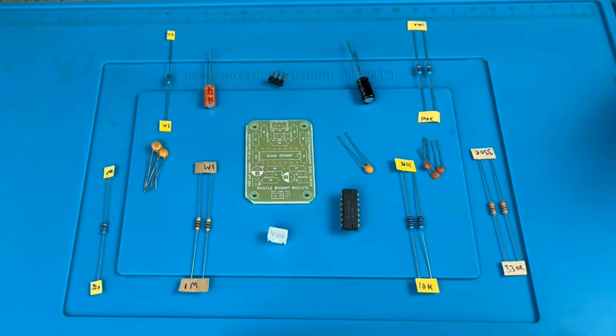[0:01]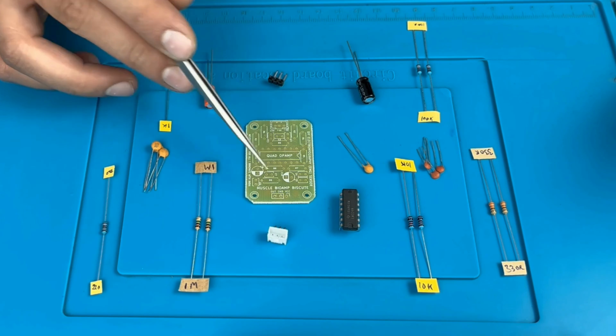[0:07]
In today's video, we're going to assemble all these parts in this PCB. By this, we'll be making our Muscle BioAmp BisCute.
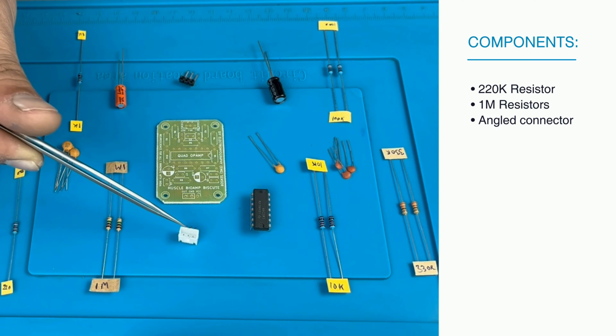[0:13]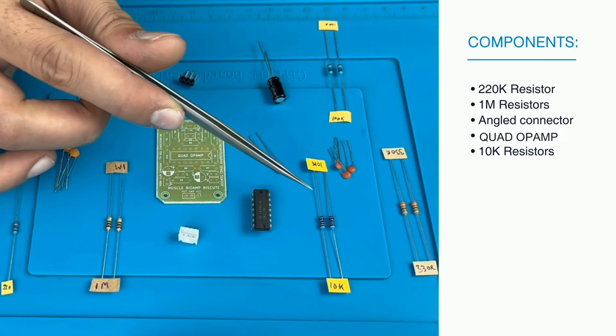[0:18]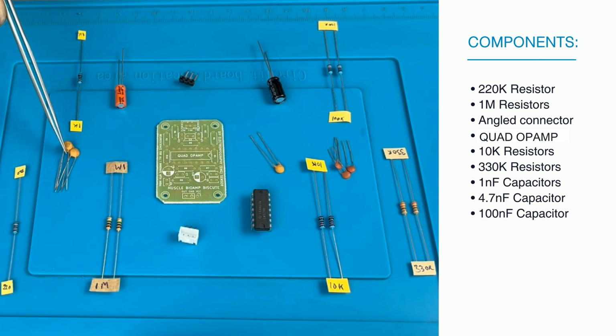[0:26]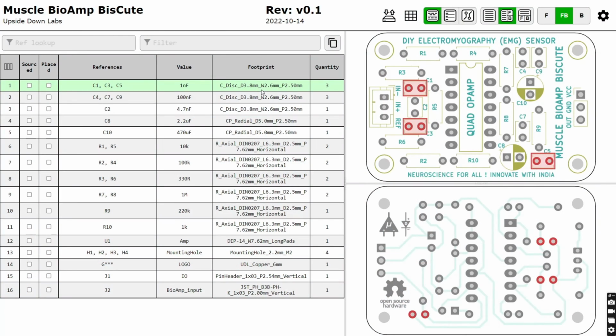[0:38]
This is the interactive BOM. By using this, you can assemble these parts in the PCB. To access this file, you can get the link in the description box below.
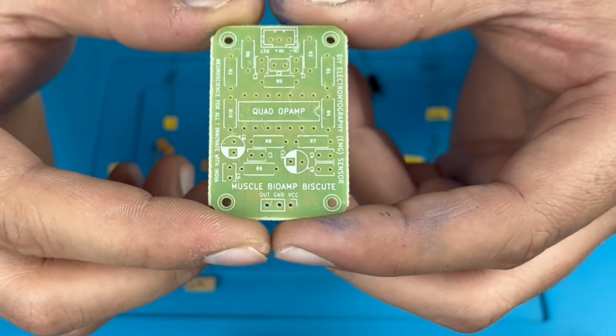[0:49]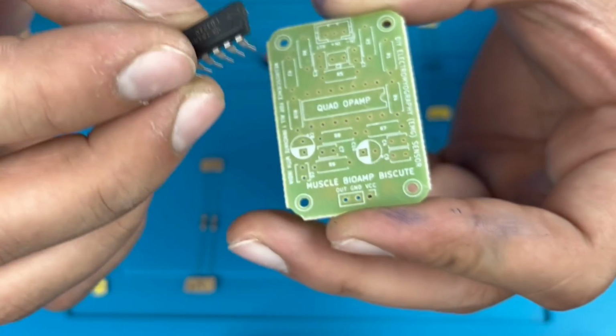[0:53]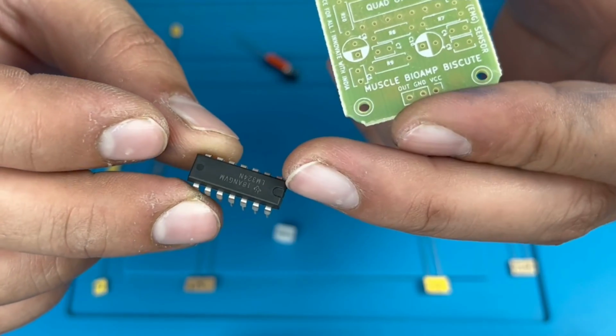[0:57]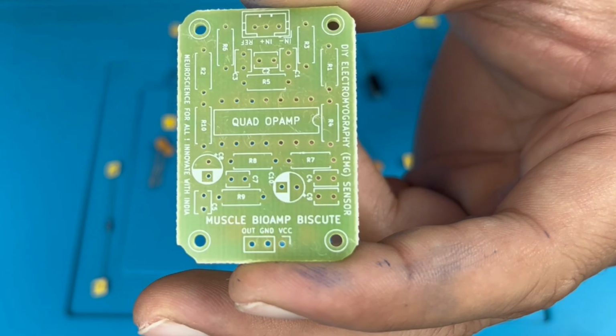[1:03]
This is the PCB. We will put the LM324 IC over here. You see the notch over here. This is the diagram. In this way, we will put the IC in this PCB. This is the cut. By this, we can take the reference.
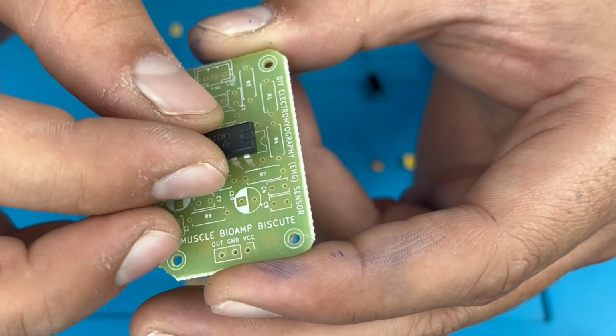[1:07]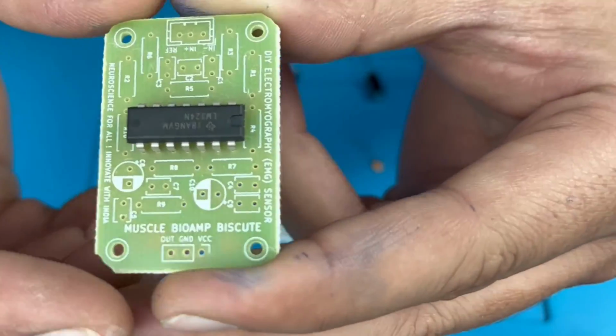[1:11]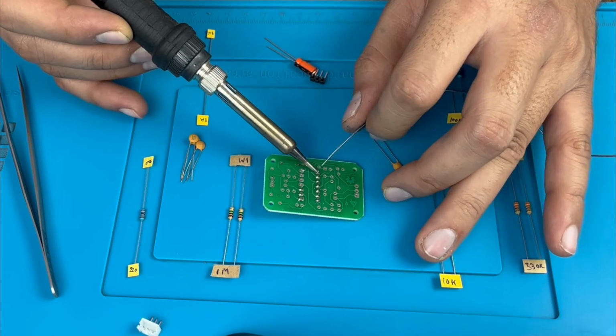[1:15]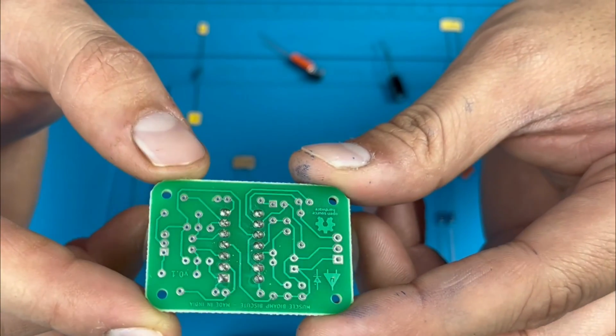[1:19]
Insert this IC carefully without damaging the pins of the IC. You see, it is carefully done. After this, we'll solder it. This is how it will look after soldering.
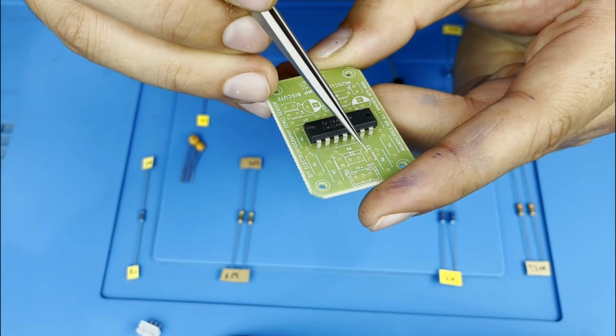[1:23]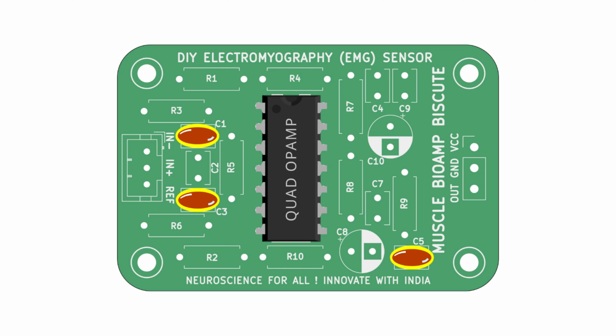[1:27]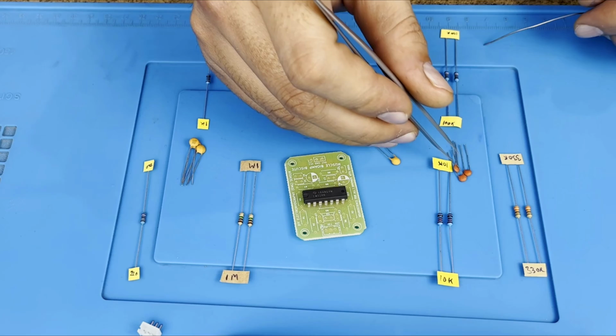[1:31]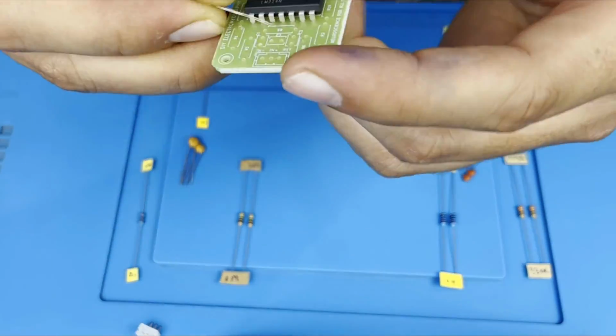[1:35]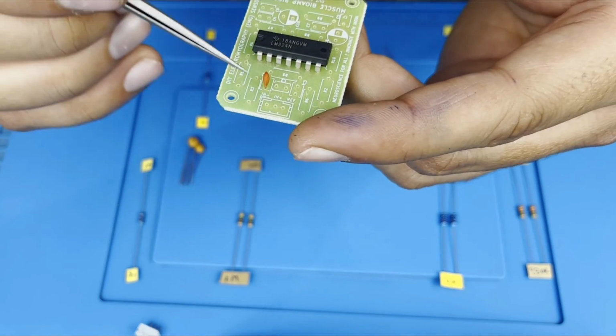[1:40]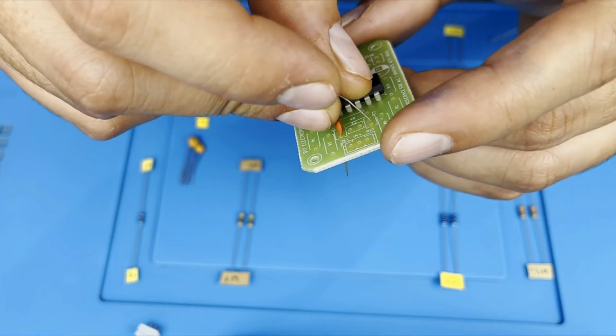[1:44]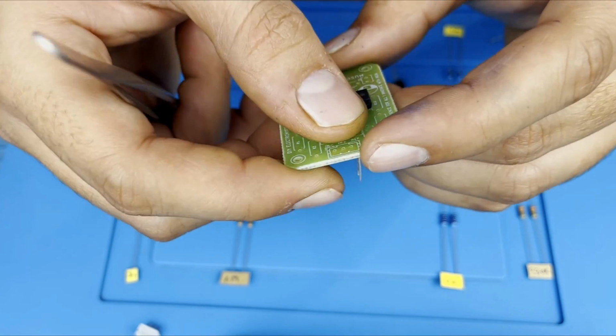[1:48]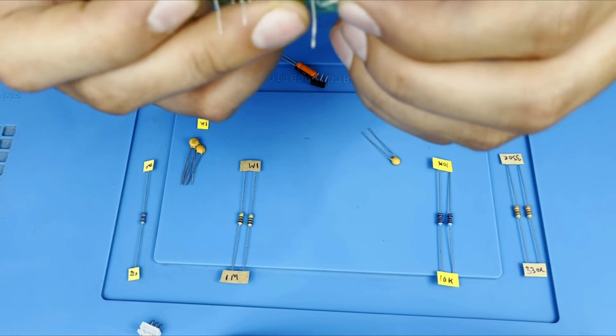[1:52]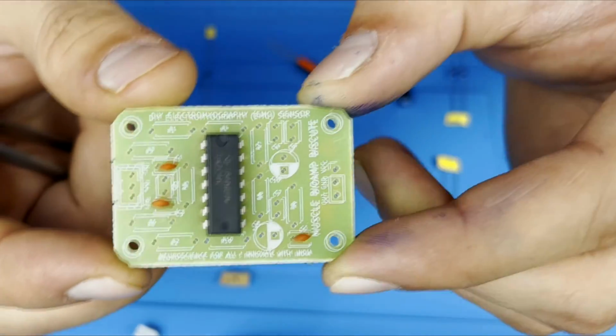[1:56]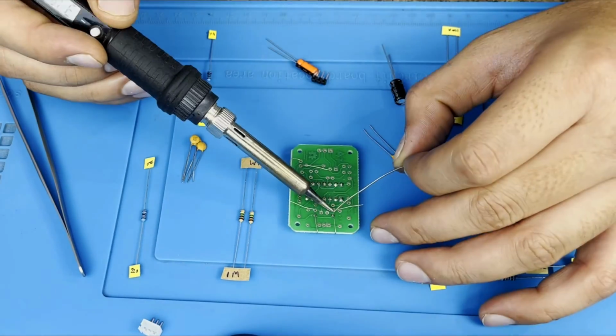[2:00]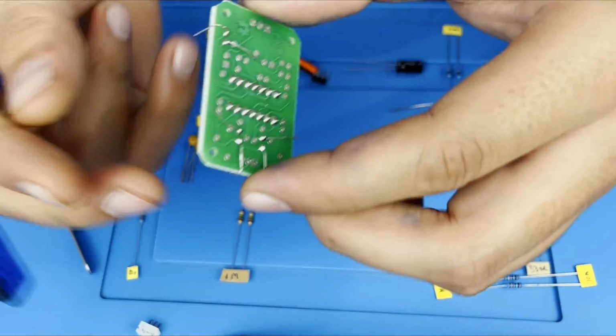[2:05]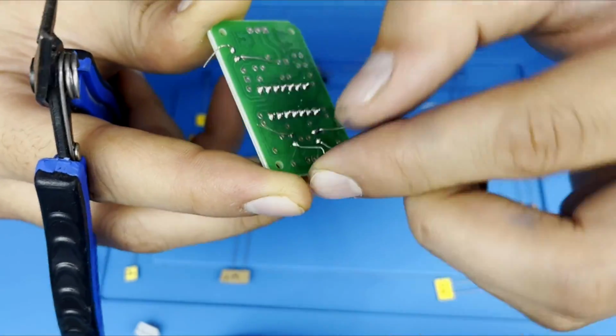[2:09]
Now we'll insert 1 nF. This is a diagram at C1, C3, C5. There is no positive negative in the capacitor, so we can insert it anyway. After this, we will bend the pins so that the components will not fall from the PCB while soldering. Remember that the pins should not touch each other. After soldering, we will cut the extra pins that remain without damaging the solder part.
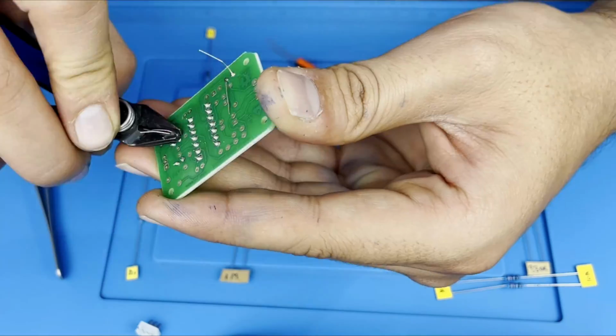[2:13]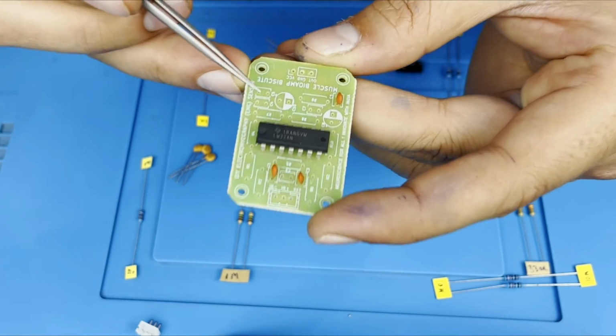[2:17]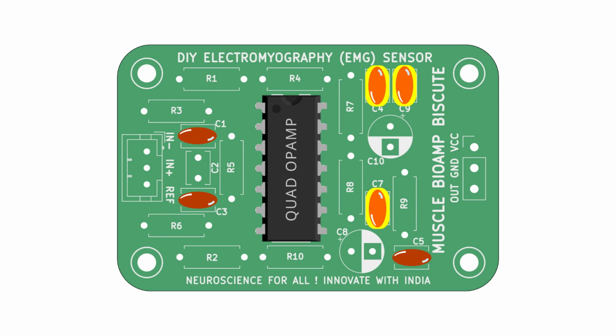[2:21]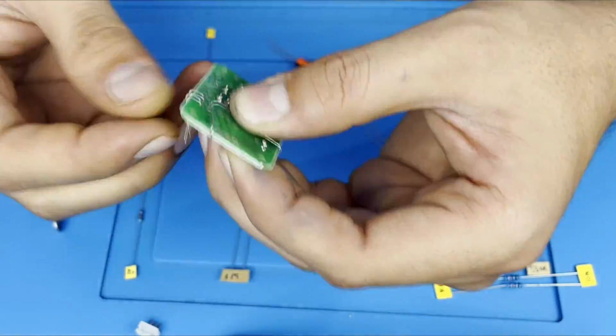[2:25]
This is the 100 nF. We will insert it in the C4, C7, C9 location. In the diagram, we can see C4, C7, C9. We will do the same thing as we did to the other capacitors.
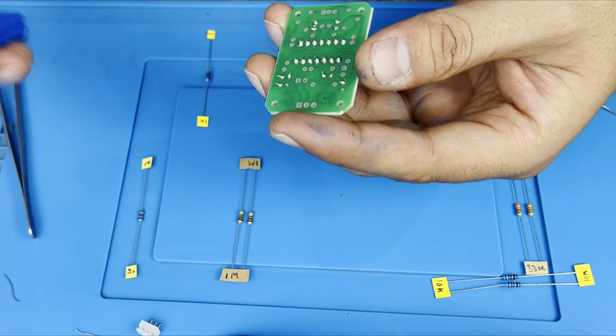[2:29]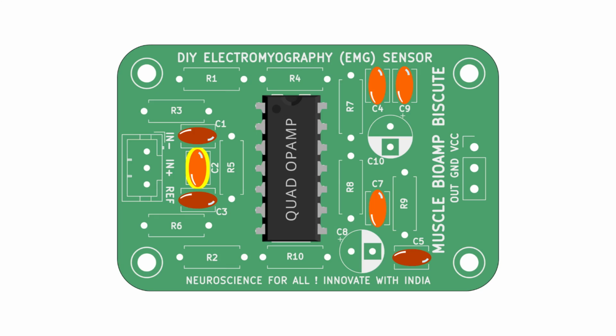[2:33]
Now we will take 4.7 nF. By this diagram, we can see we have to insert it in the C2 location.
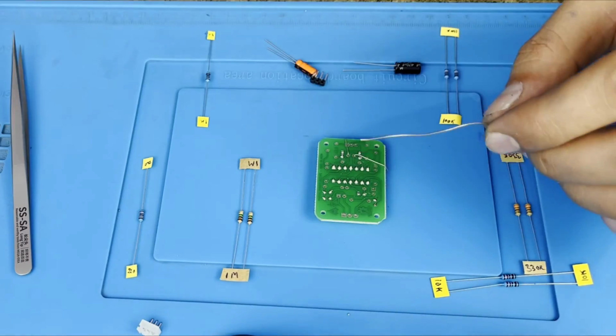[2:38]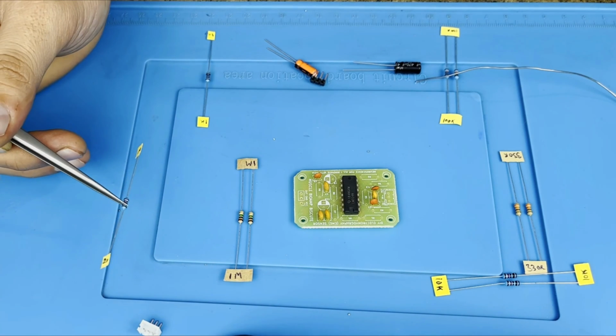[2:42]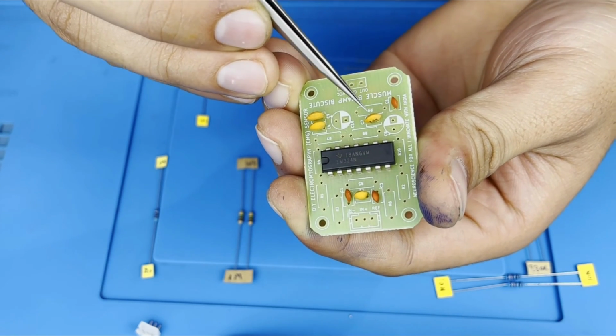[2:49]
This is our 220 k resistor. It is located in the R9. By this diagram, we can see R9 over here.
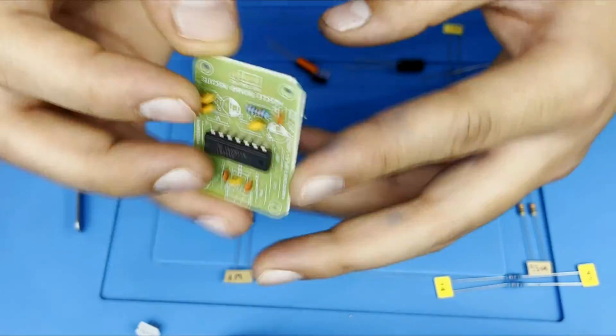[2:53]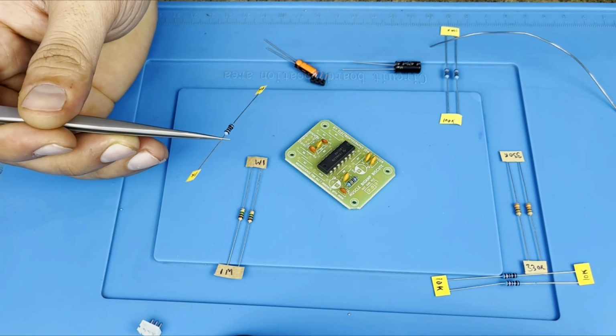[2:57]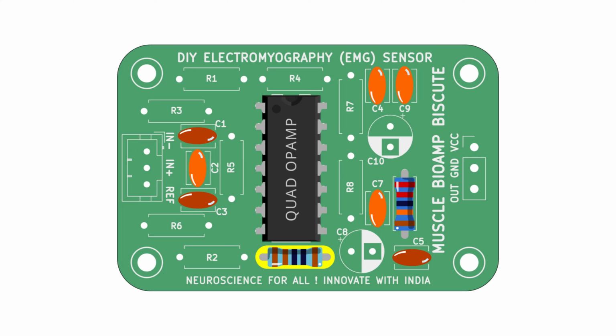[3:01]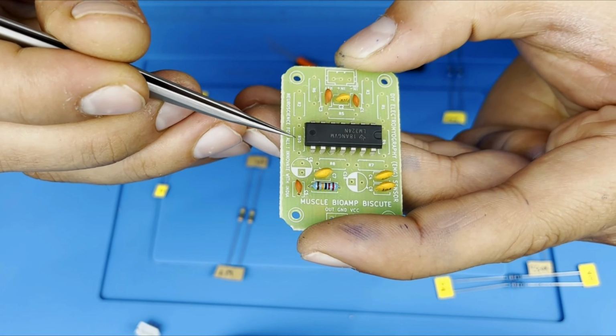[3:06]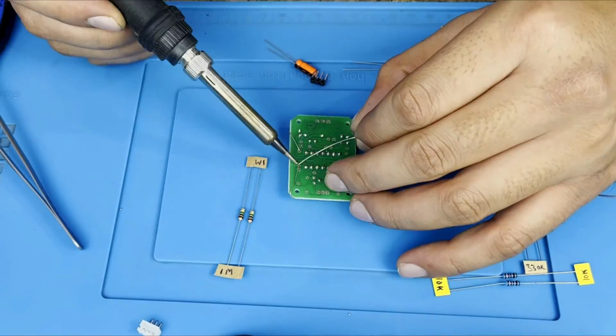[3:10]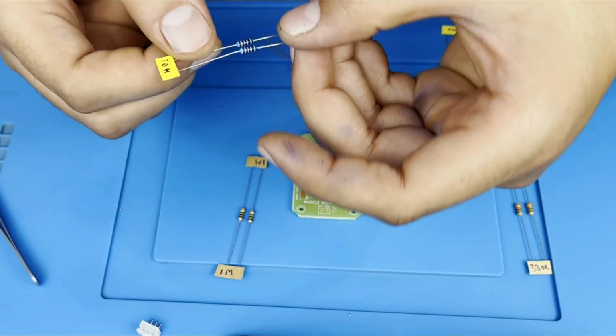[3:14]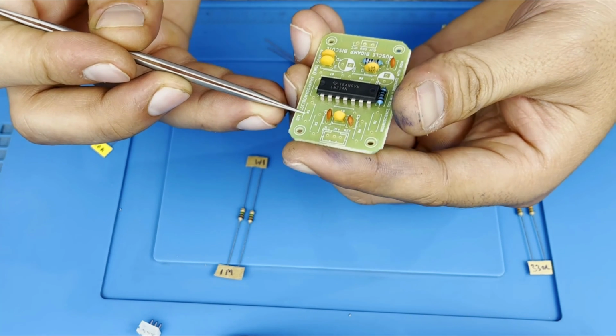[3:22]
This is our 1 k resistor. It is located at R10 below the IC over here. This is our 10 k resistor, R1 and R5. Now, this diagram you can see over here, R1, R5.
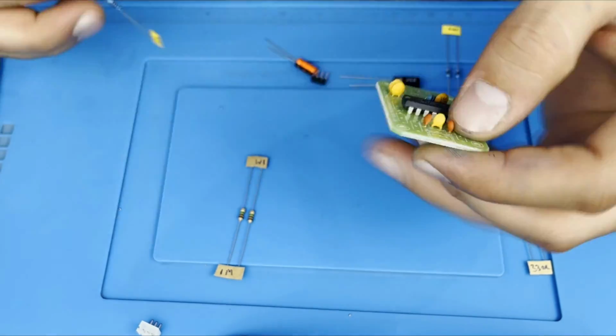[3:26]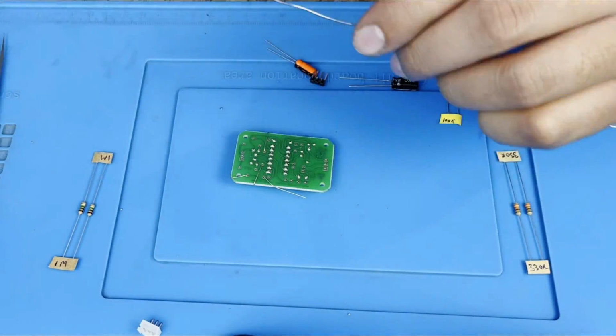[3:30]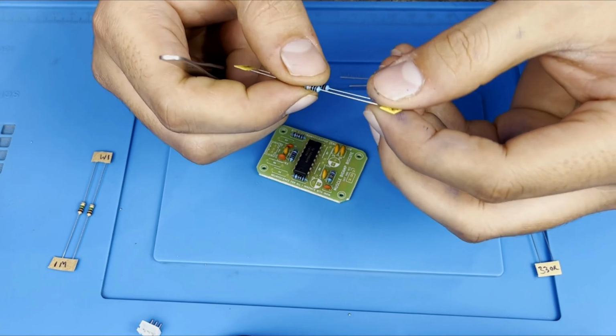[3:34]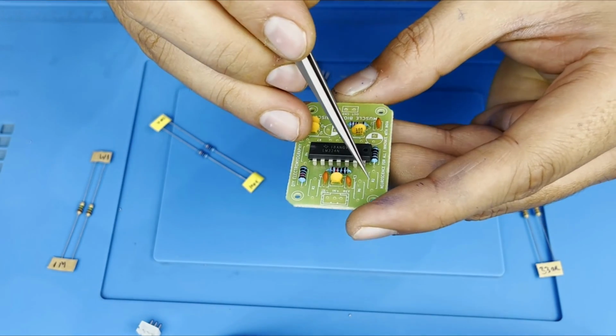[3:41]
Now we have the 100 k resistor over here. It will be inserted in the R2 and R4 location. By this diagram, we can see in the reference R2, R4.
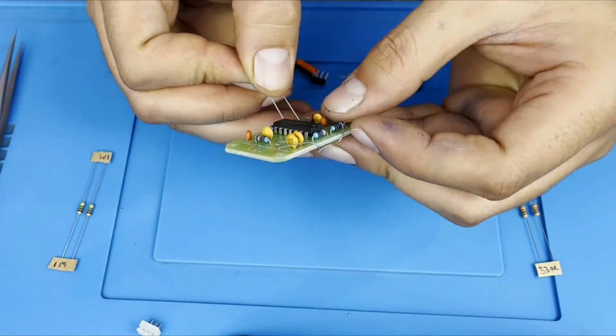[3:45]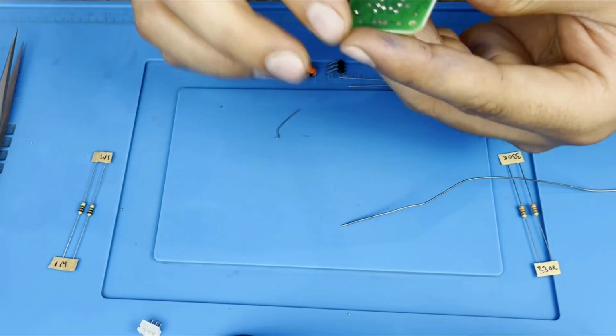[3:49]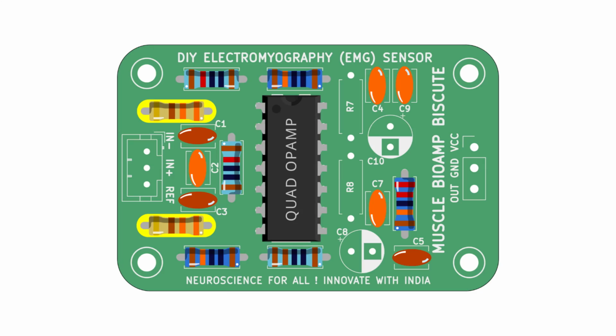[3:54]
Now we have the 330 R. It will be located at R3 and R6. The same is shown in the diagram here.
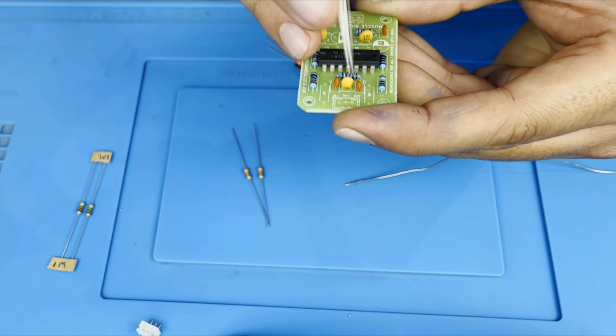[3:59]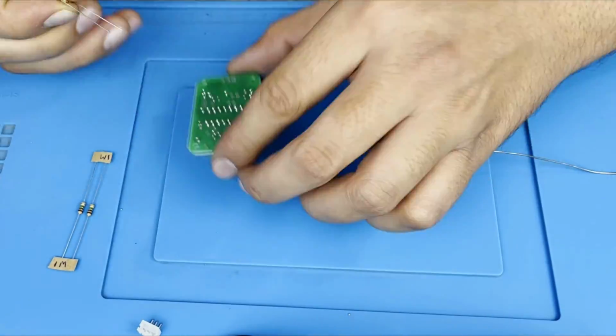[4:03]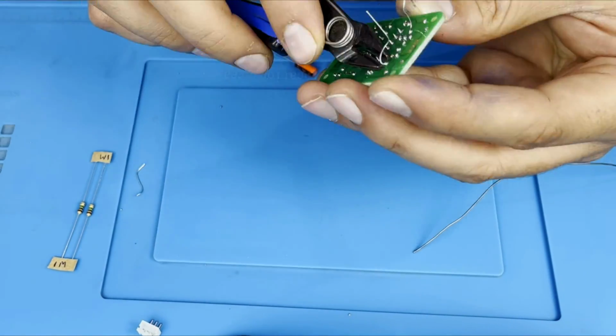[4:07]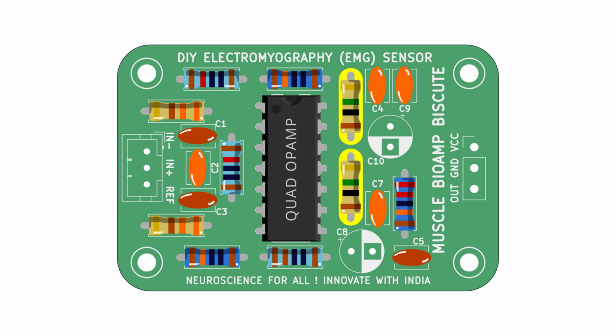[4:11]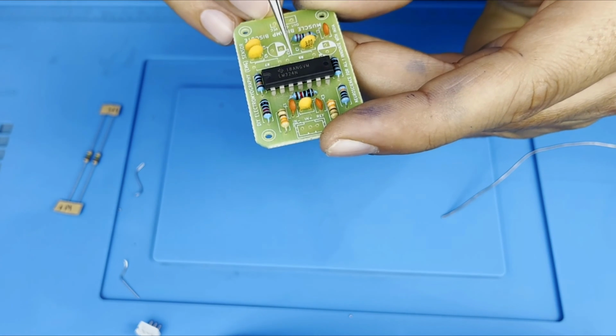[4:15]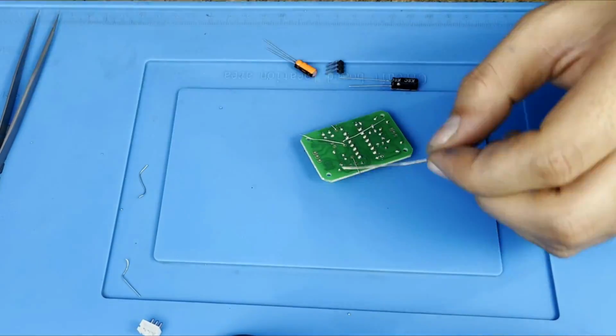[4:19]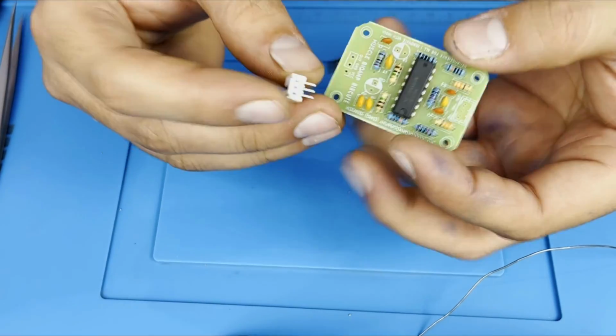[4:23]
This is our 1 M. We will insert it on the R7 and R8. Remember that your station should be clean after cutting the extra pins. We are inserting the connector over here.
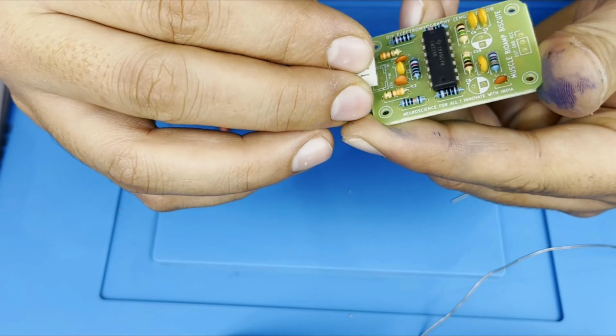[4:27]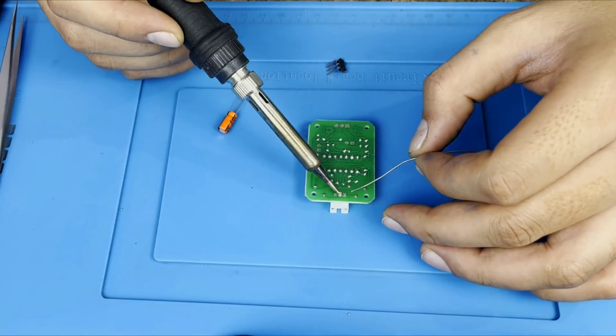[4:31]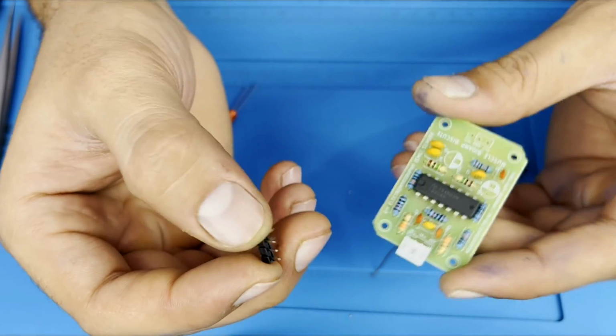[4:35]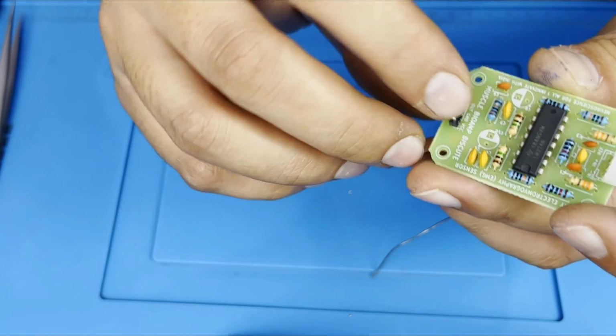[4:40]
This is our header pin. We can see in the diagram. All three pins should be individually soldered.
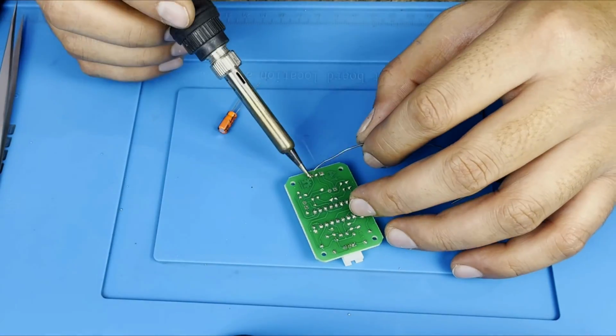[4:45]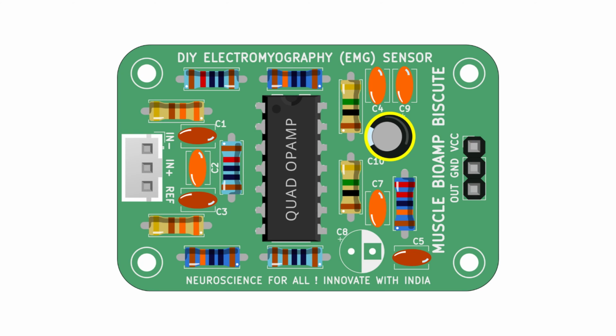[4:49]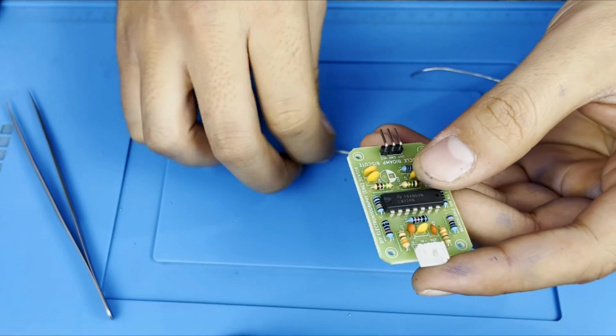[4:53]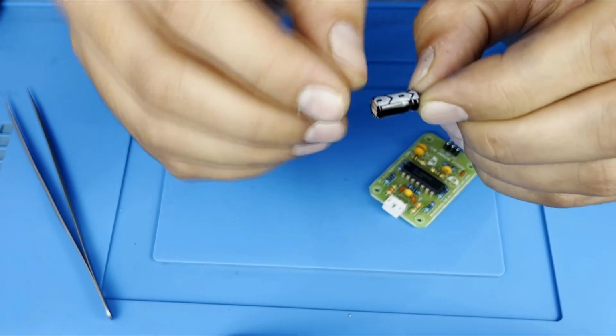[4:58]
This is our 470 uF. It will be located at C10. Over here we can see in the diagram also. This is the minus part, and this color over here we can see the location. This is our negative.
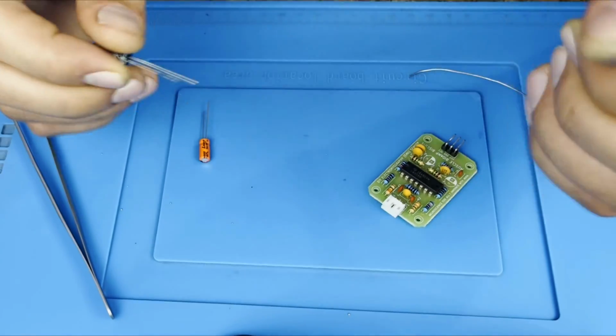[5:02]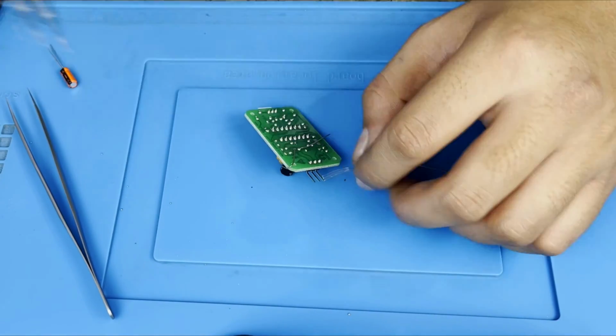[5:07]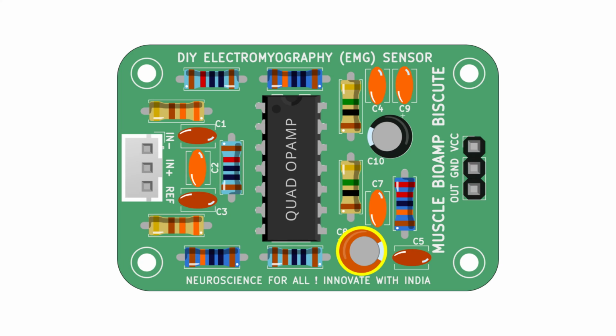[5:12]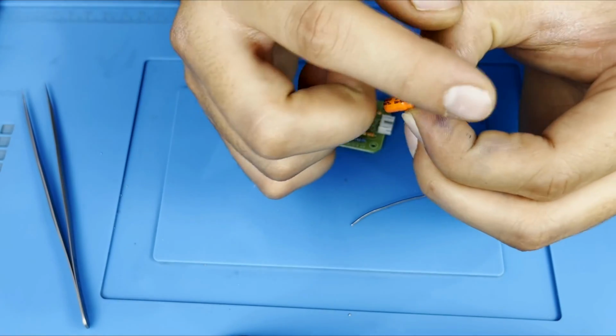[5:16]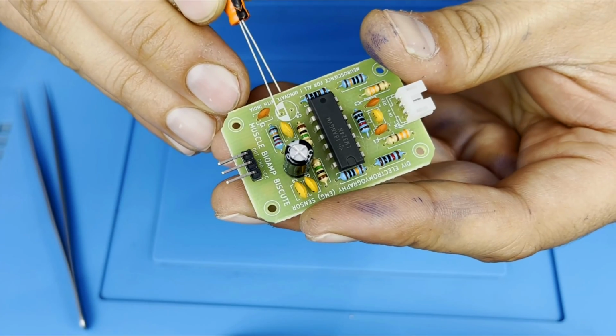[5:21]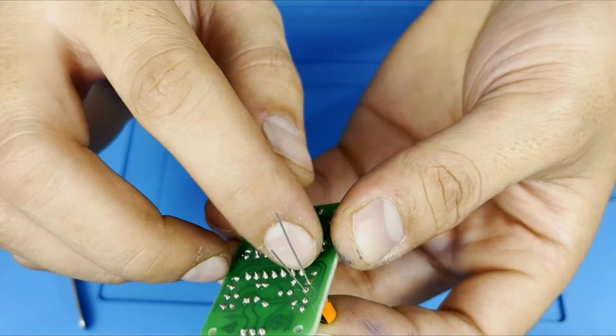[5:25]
This is our 2.2 uF located at C8. This is the negative. The bigger pin will be positive, shorter will be negative. The white area is for the negative and the blank area is for the positive. Carefully insert it and after this bend the pins and solder it.
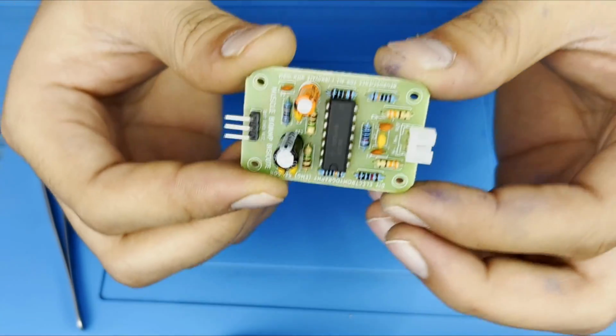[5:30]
Now here we have completed our BisCute. I hope that you can also do the same. This is how the final look will be.